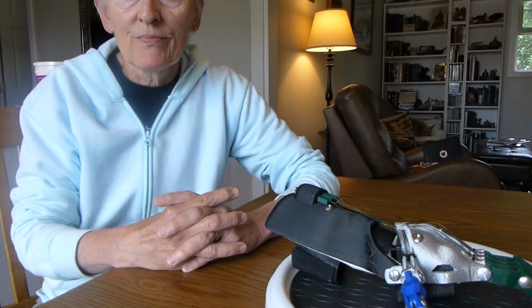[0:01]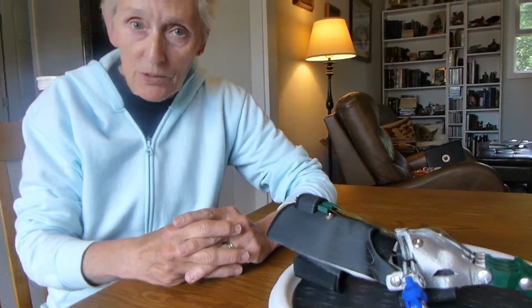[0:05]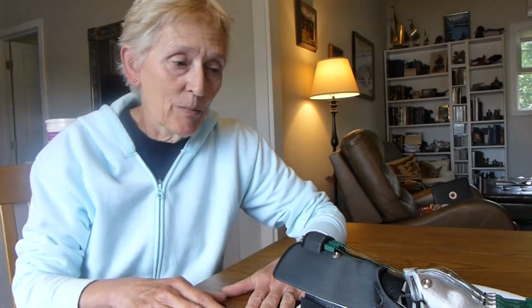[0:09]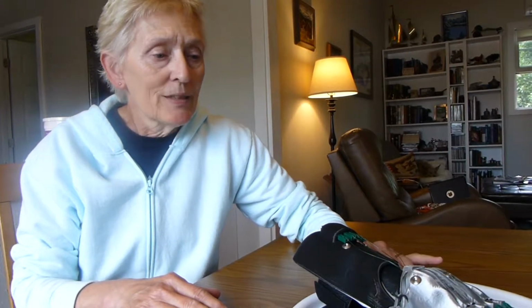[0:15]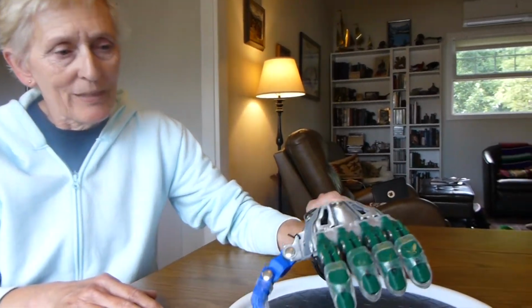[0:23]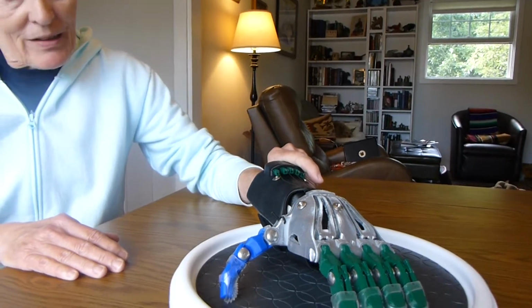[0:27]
My husband Earl and I work as a team. I do the 3D printing and we assemble the hand together. This is our second type of hand to produce. We received our Phoenix Unlimited hand badge back on June 23rd. This is a Cyborg Beast left hand printed using PLA filament.
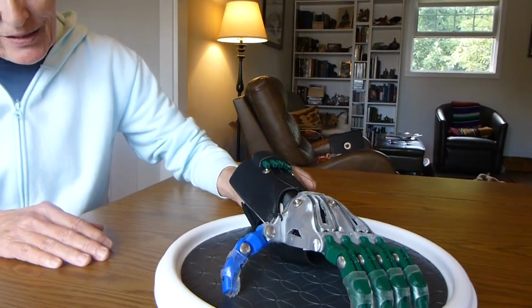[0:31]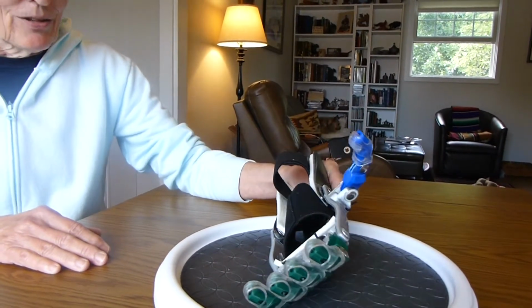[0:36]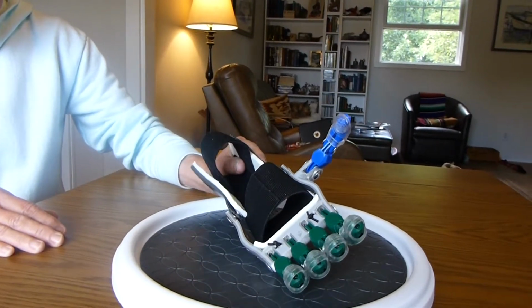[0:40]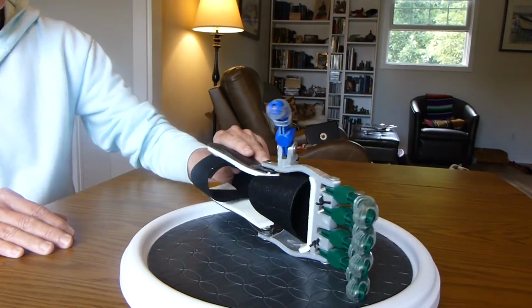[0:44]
Per the scaling instructions, this hand, which is scaled at 140%, is supposed to fit a 16-year-old, but to me it looks far too small for a 16-year-old's hand.
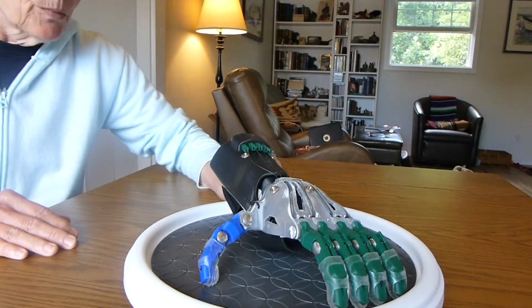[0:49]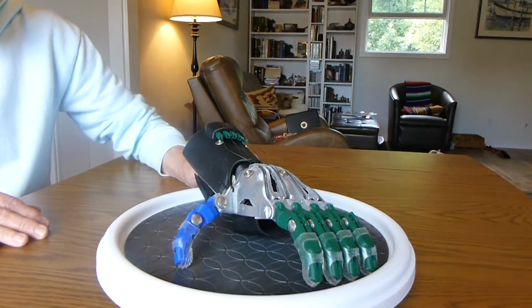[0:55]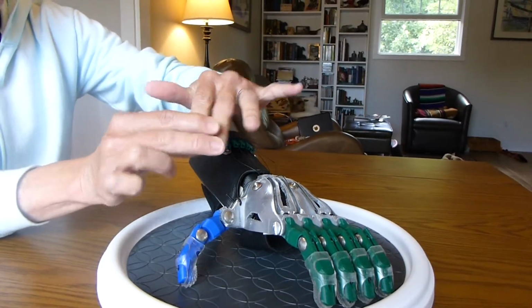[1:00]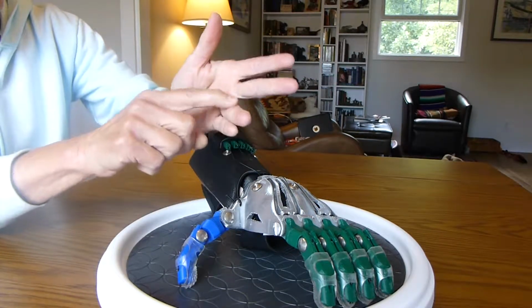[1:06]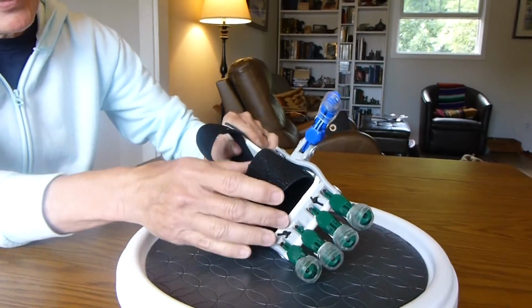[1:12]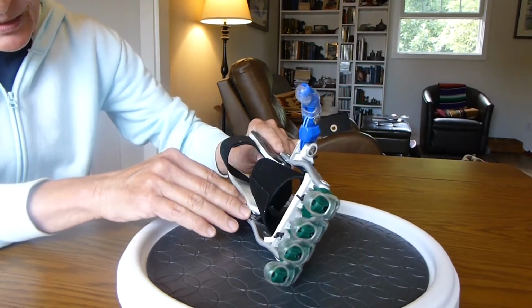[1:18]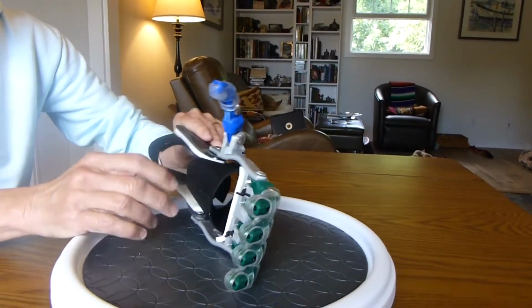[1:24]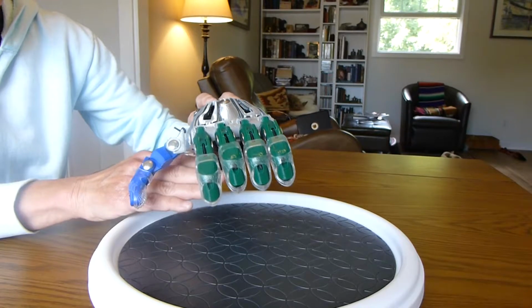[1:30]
We chose this model because we're currently working with a 5.5-year-old recipient who is missing these two fingers and has a small thumb and small and somewhat crooked third and fourth finger. And we think that this model, because it uses Velcro and not a molded plastic mesh, and because of the way it's shaped, will be the easiest model to modify to work for the recipient Scout's hand.
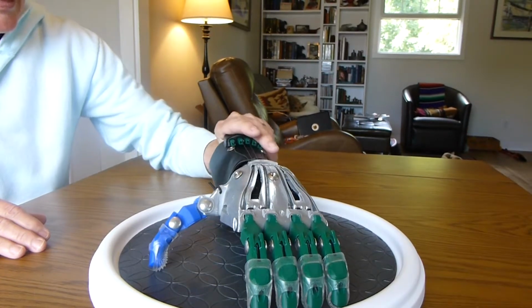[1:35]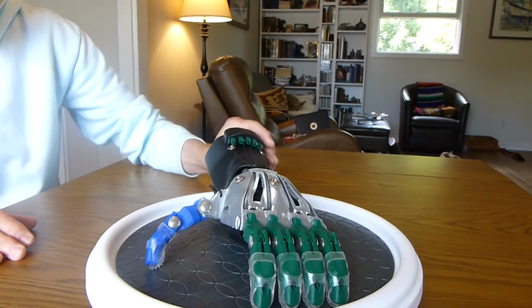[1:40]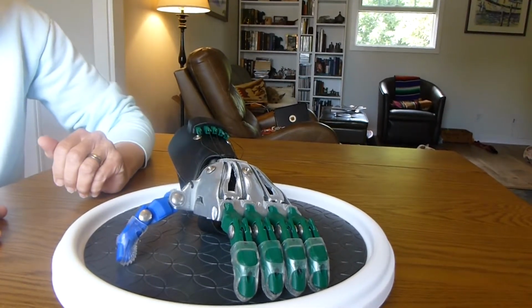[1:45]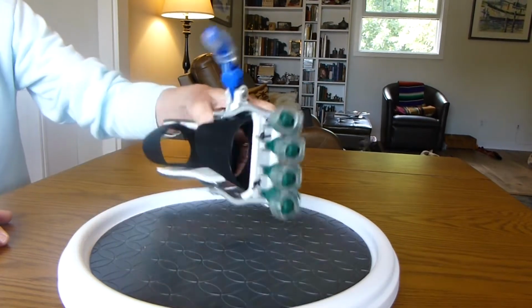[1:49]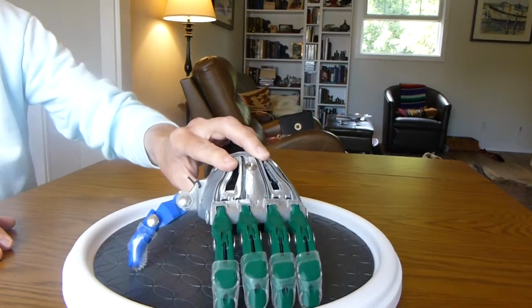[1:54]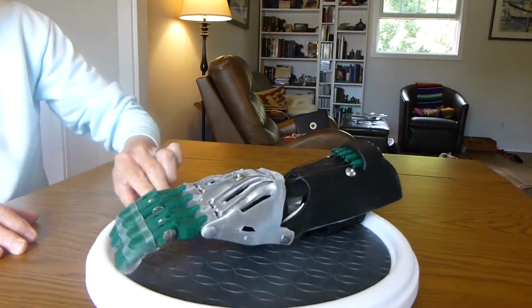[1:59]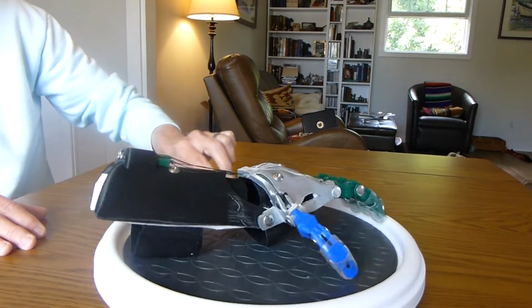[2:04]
The mother is making a cast of his hand, and she should be sending that to us shortly, and once we have that cast, we'll be better able to determine the correct scale as well as make modifications to fit his hand. So we'll rotate this around so you can see the print quality. Turn it over.
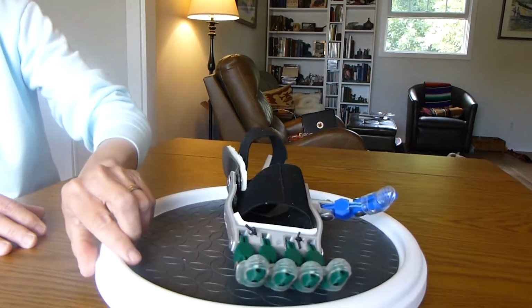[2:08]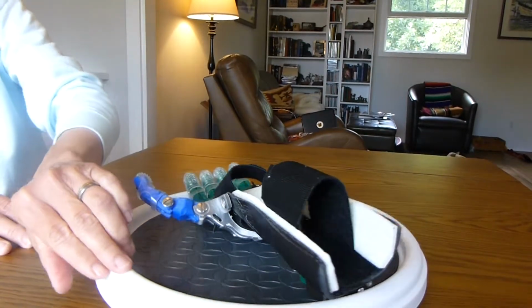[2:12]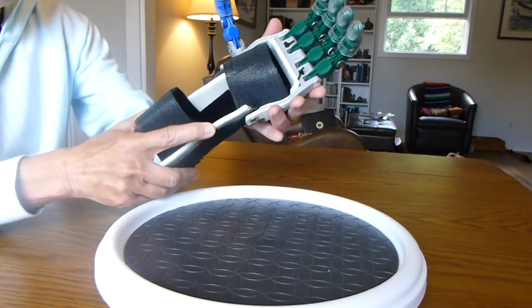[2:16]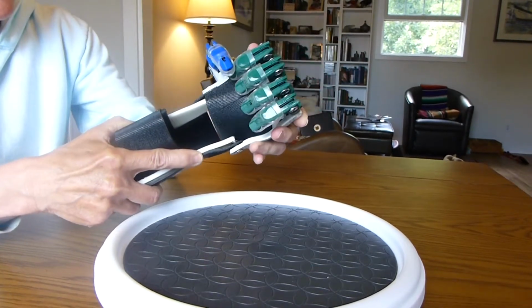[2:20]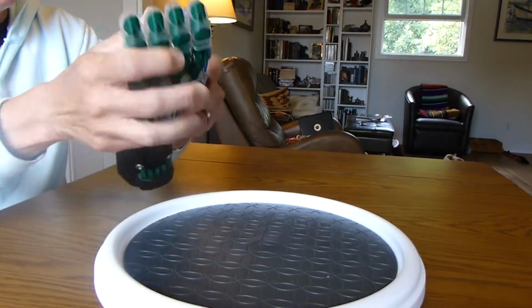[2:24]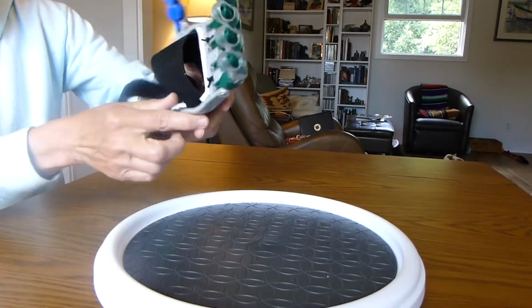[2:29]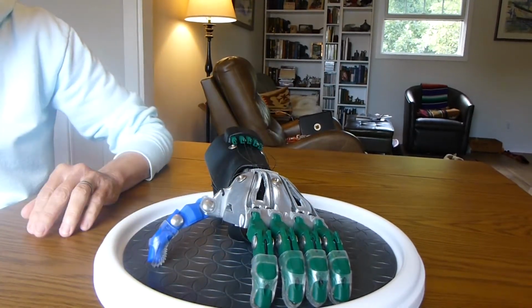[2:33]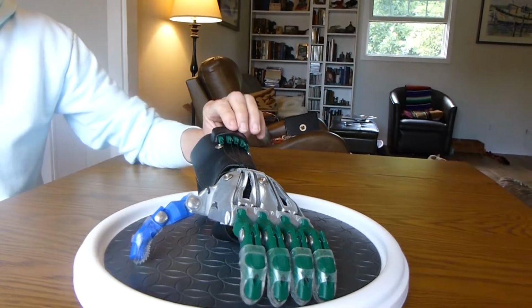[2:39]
As you can see, it closes quite nicely with very little flexing of the wrist. And it's quite strong and sturdy and could withstand lots of stresses. The STL files for the design were downloaded from Thingiverse, and the assembly kit purchased from 3D Universe.
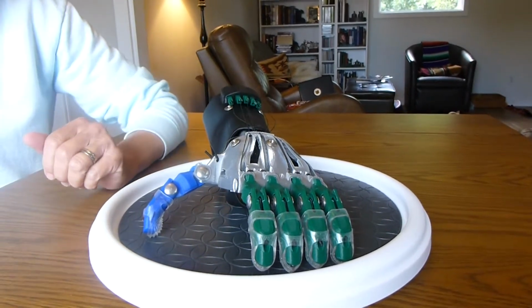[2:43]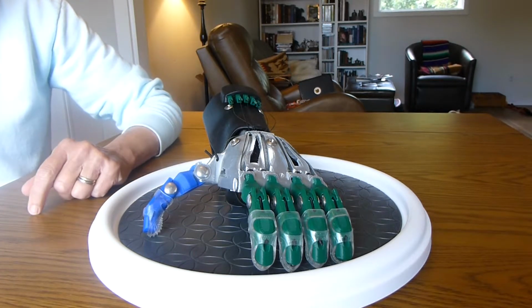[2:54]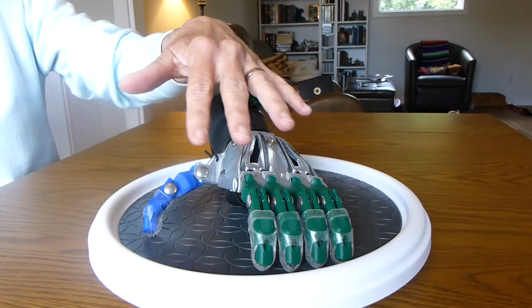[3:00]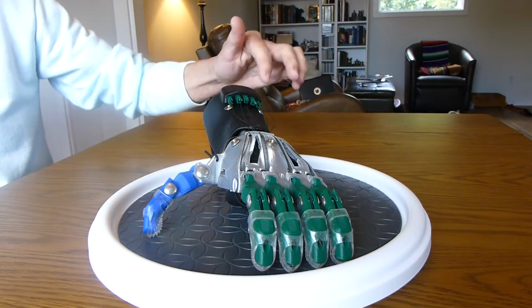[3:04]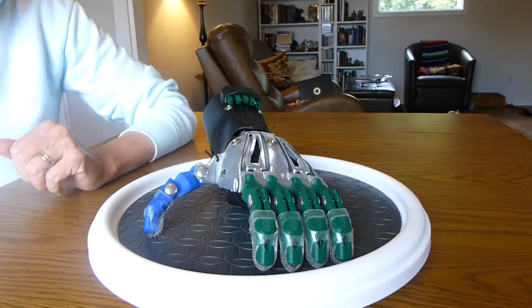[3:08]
The hand was printed on a Maker Gear M3 independent dual extruder printer with a layer height of 0.2 millimeters. Infill density ranged from 30 to 35% for the larger parts and 100% for smaller parts like the tensioner blocks. We encountered a lot of challenges in making this hand.
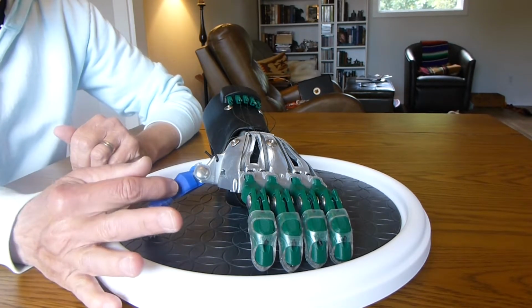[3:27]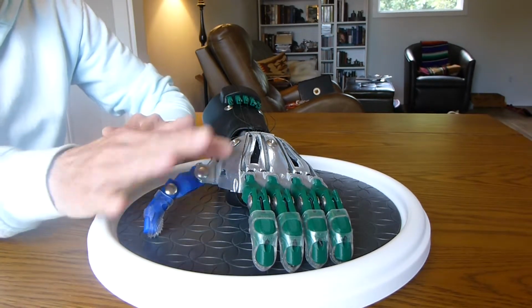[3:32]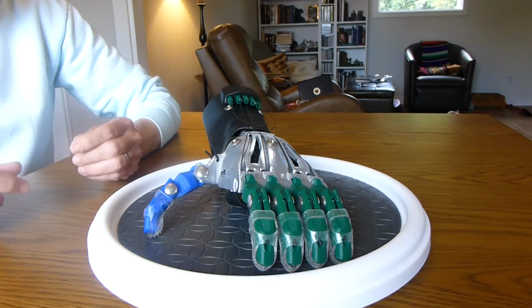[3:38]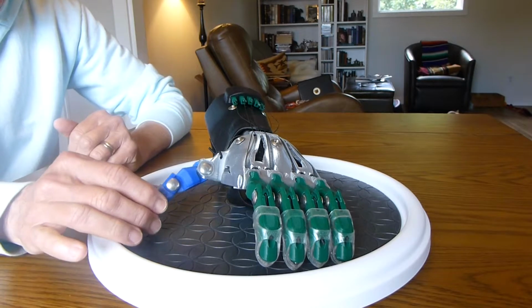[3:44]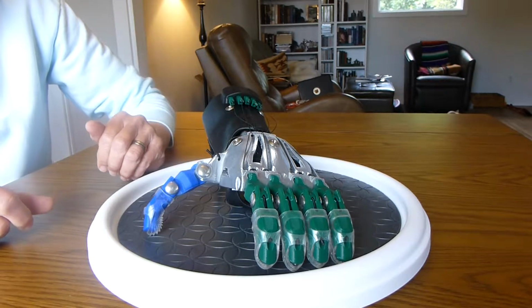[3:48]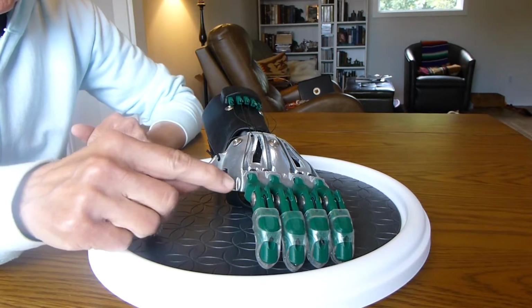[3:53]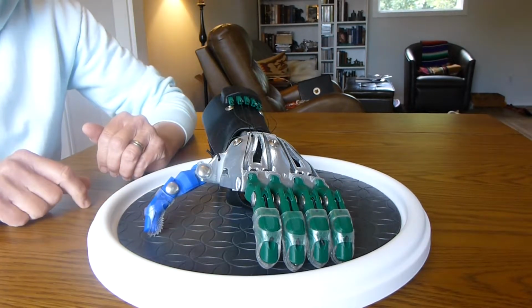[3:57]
We originally started at 120% because that's what the scaling instructions recommended for a 5.5-year-old. And we started with the model that used the plastic pins in the hinges instead of the Chicago screws. But at 120%, the pins were so tiny and fragile that they just broke. We then tried making at 120% in this model with the Chicago screws for the hinge pins. But even then, all of the holes where the Chicago screws go were far too small. And when we tried enlarging the holes, the area around the holes was too fragile and breakable.
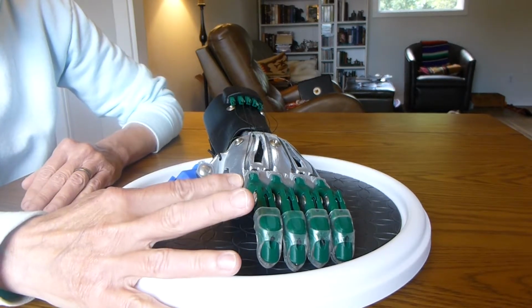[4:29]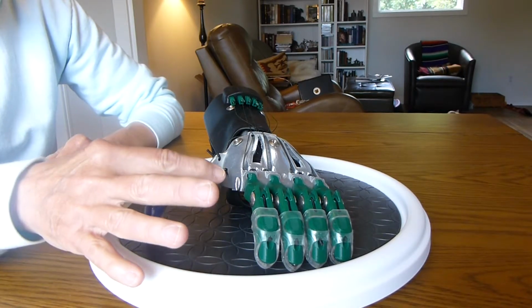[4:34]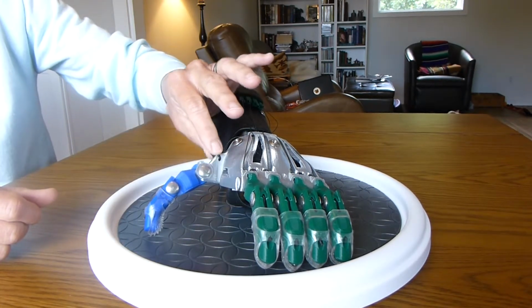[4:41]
We then took a good look at the measurements in the photos of our recipients' hands and decided that 140% would be a more realistic scale to work with. At 140%, it worked better. We still had to enlarge the holes for the pins, but for the fingers and palm, they were strong enough to handle the enlarged holes. The thumb, however, was still too weak and broke.
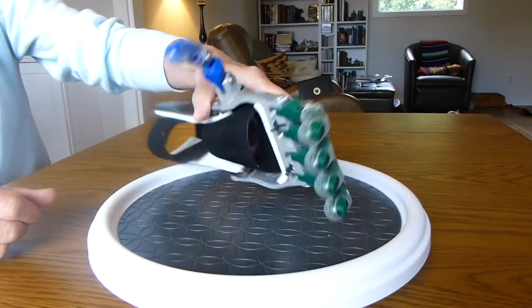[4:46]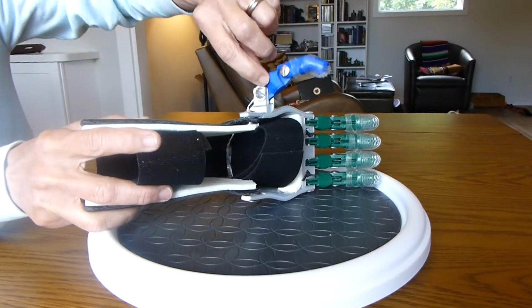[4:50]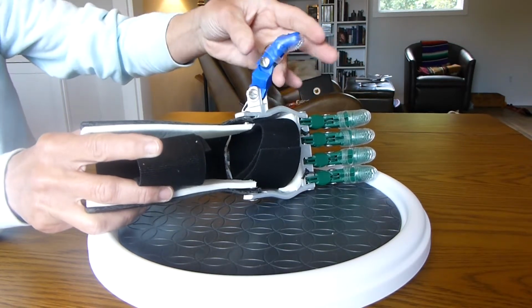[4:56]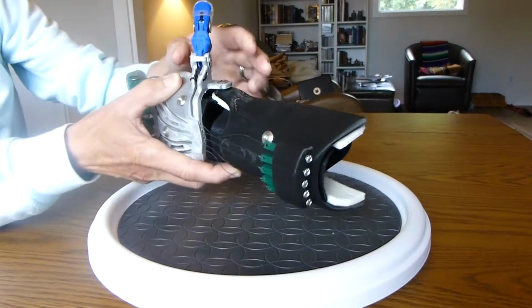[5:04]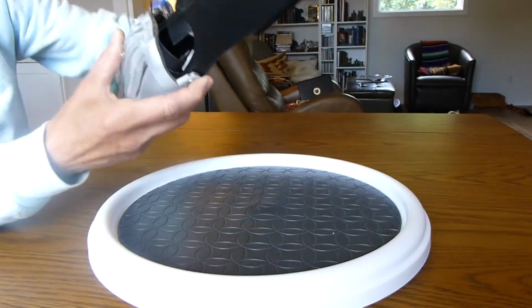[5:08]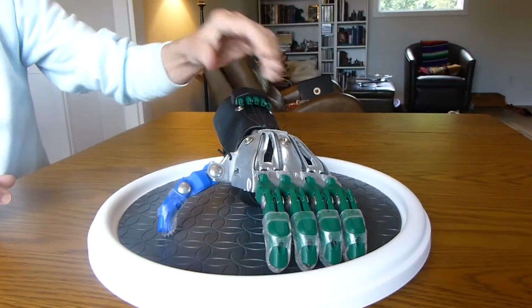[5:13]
So what we did is we made it as wide as we could around the pin without interfering with the thumb movement. There was about 2 millimeters of room there that we used, and we also made it wider this way to strengthen the area. And finally, we were successful and have a hand that works quite well.
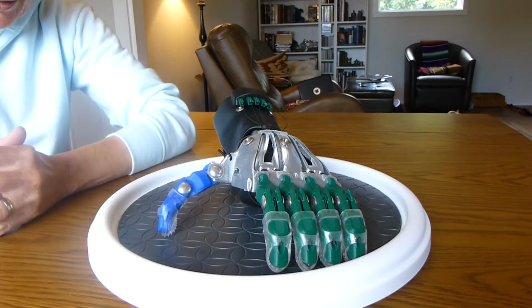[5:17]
I think this is a really nice model, but at a smaller scale, it needs a lot of work to make it strong enough. And the instructions for this model really weren't as thorough and clear as for the Phoenix Unlimited hand.
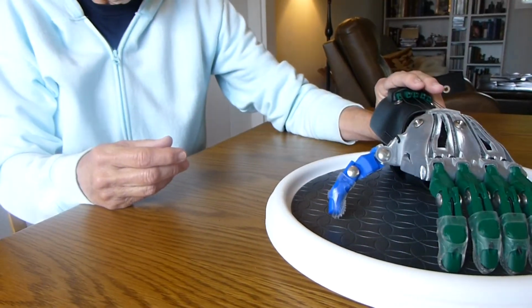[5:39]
Well, thank you very much. We hope you approve our printing and build of this hand, and we look forward to modifying it and making it work for the young boy we're currently working with.